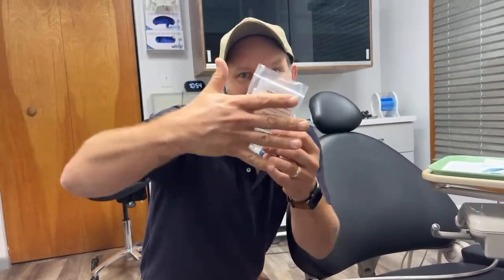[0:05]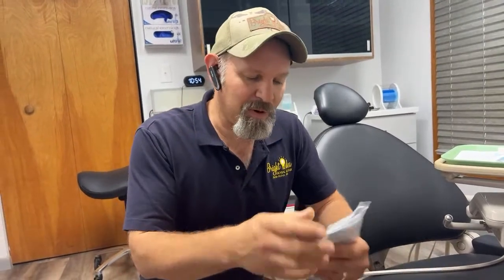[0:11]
I'm trying to do this to show you what it's going to be, but it's centering my face, so it's in all the words. So I'm having to do this, and we were able to get a little more information. I was on the right track.
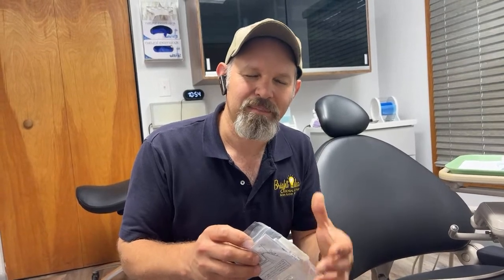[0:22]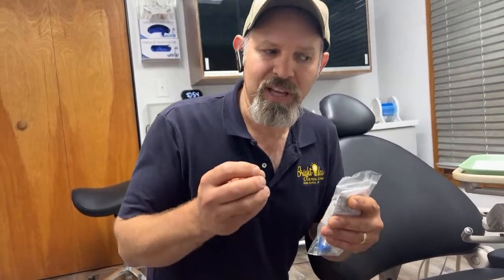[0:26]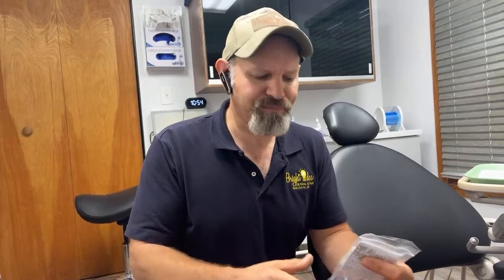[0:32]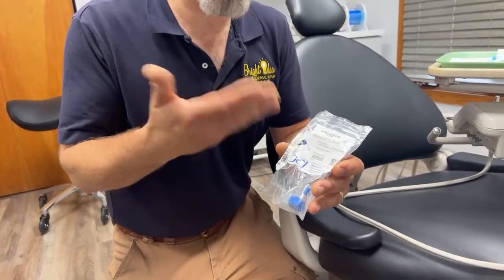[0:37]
That potentiometer is bad, I believe. I tried to adjust it and it didn't do the trick. And things always break where they're touched, where they rotate, or where they move. So this is no different. I think we just have a potentiometer that went bad in that lower position. And in my repair bag, I happen to have a DCI, or I'm sorry, DCI 9258.
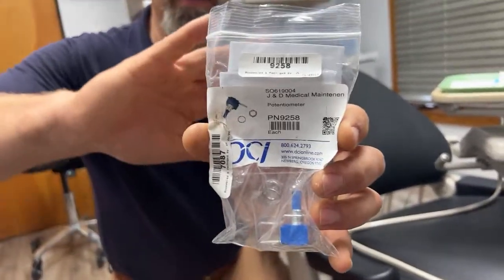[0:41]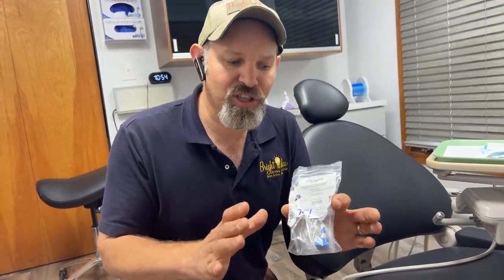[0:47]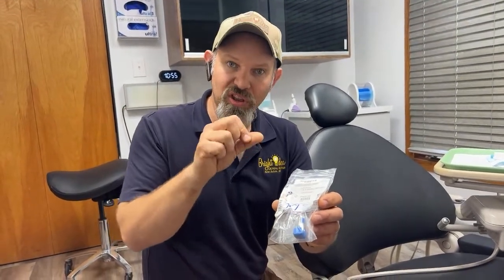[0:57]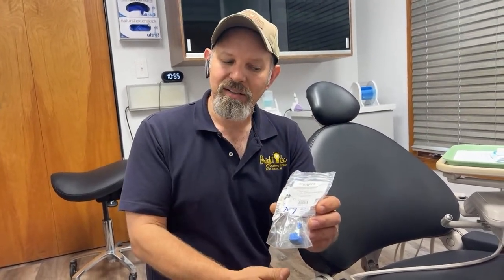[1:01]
This is a pretty common part. This potentiometer is a variable resistor. What that does is as it rotates, the resistance value goes up and down. That will tell the machine what position the rotation is in, which gives it an idea of the position of the chair.
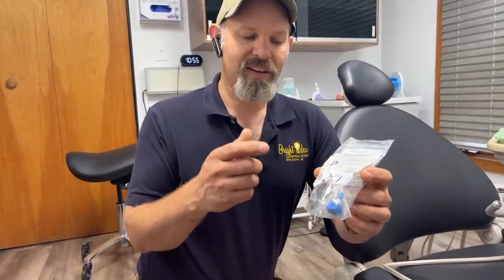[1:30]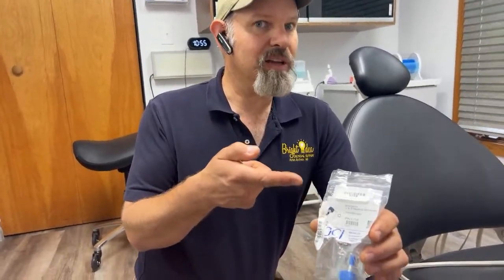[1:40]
The way the chair works is there's a main board, and the main board takes in all these different sensors and different things, and the chair can make decisions on what it can and can't do based on those. Essentially, if it loses that sensor, it either won't move, or it'll freak out, or it'll throw an error. But this particular part, I know for a fact, is on Adec chairs, and it's also on Pelton Crane chairs. It's on a lot of different chairs, in multiple places, usually the base and the back. So this is really a worthy part to have in your repair inventory.
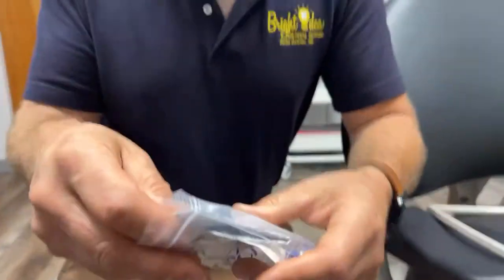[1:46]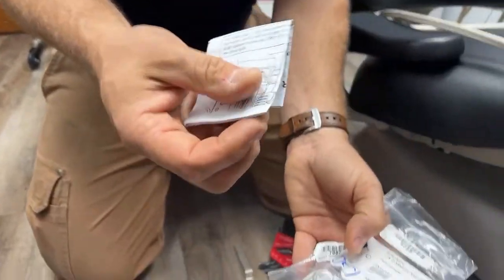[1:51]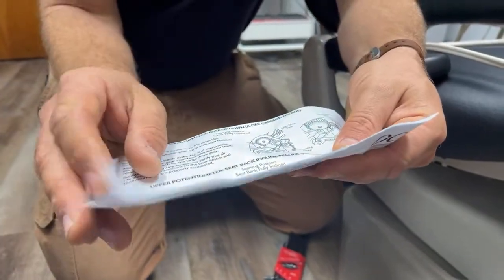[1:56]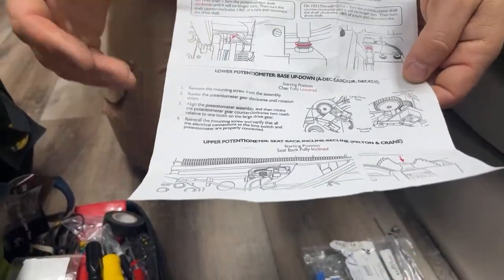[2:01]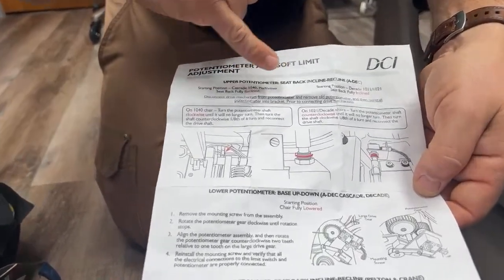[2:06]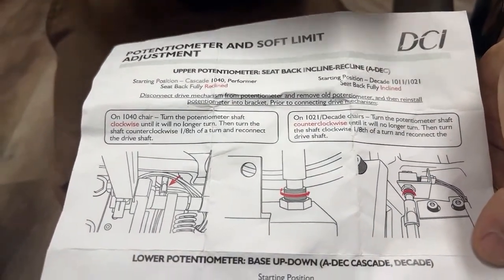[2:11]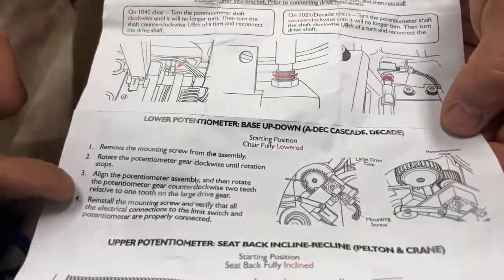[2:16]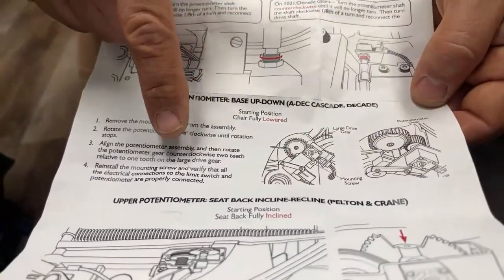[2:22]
One thing that I really like about DCI is not only do they give you the part you need, but they spend a lot of time coming up with really thoughtful instructions. They've got instructions here for our Adec 1040, and also 1011 and 1021. This is for the seat adjustment, and right here, this is actually for the base up and down. So we're going to be following these instructions right here.
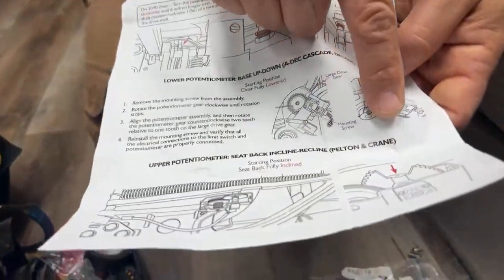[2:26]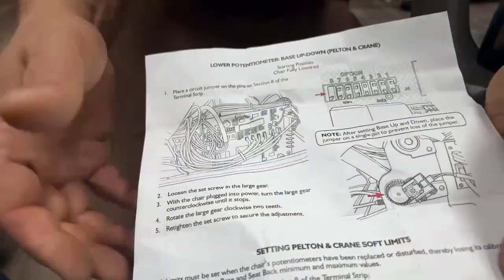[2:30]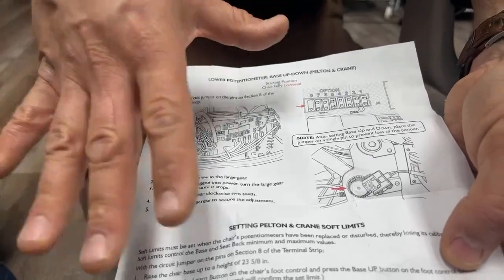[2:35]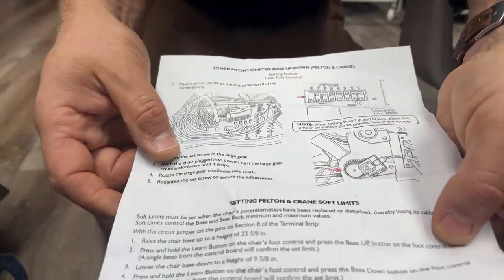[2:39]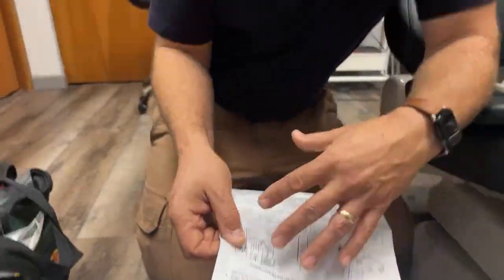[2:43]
But keep in mind, there's also Pelton Crane right here, and then right here. This is great information. It's all online. You can actually search this up and look at this closer for yourself. But this is really the heart of dental repair. These little manuals are always great to pay attention to, because they'll tell you exactly how to do the types of things that you need to do to fix your equipment.
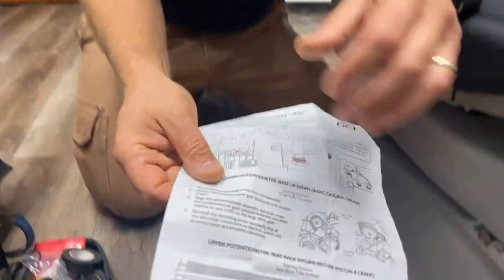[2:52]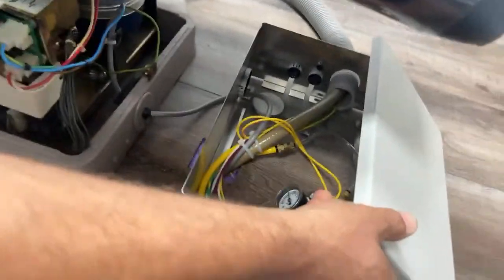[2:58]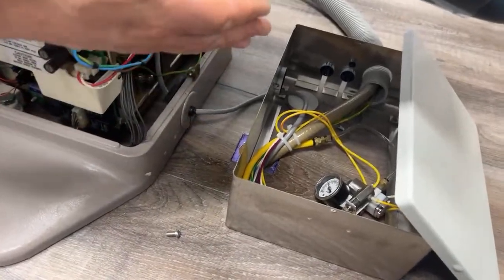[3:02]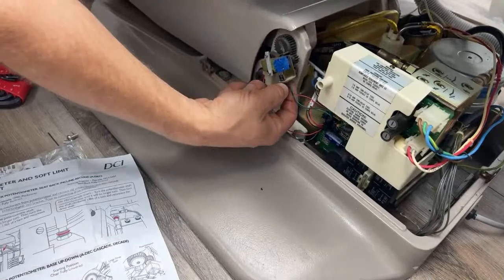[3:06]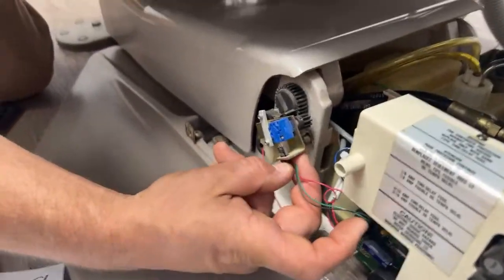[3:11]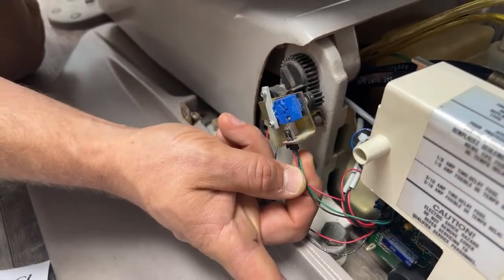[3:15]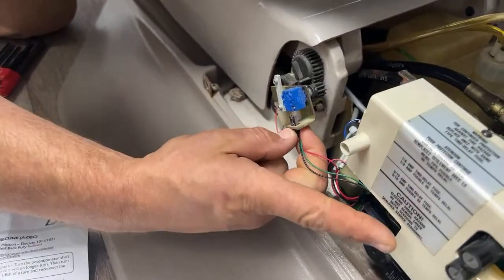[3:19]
So we're going to go ahead and unplug the chair. Actually, I'm not going to unplug the chair, because in this case, the plug is downstairs. I'm just going to disconnect power to the part, and this should be fine for this scenario. There's a little tab right here, and I'm going to pull. I'm going to pay attention to this. I'm going to remember black is up, okay?
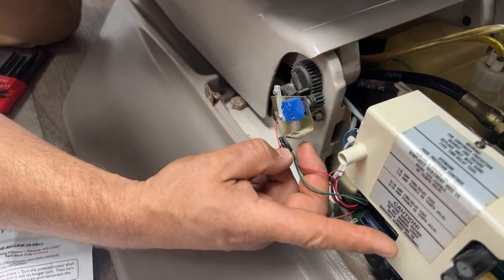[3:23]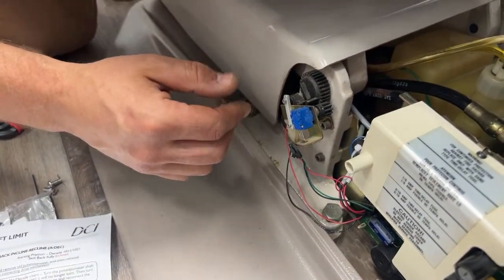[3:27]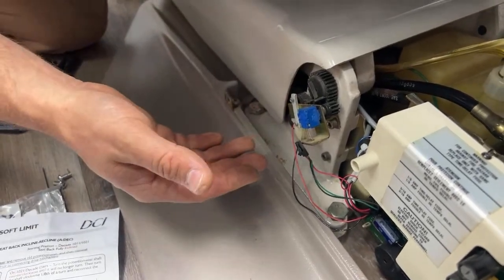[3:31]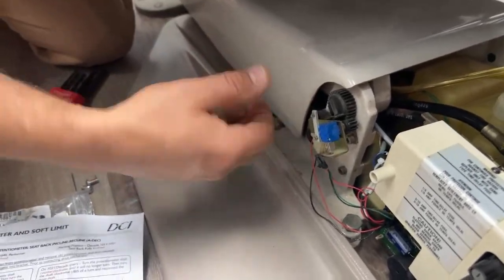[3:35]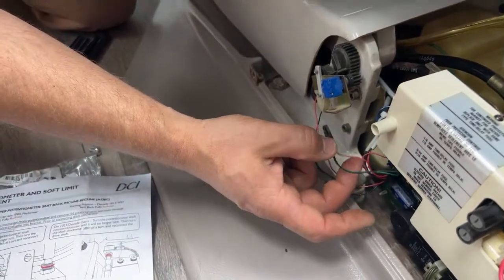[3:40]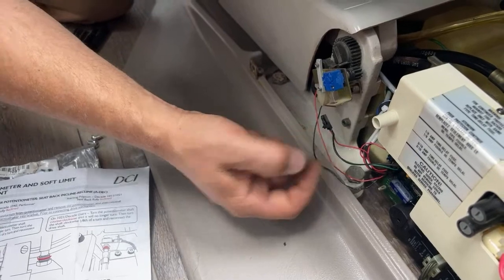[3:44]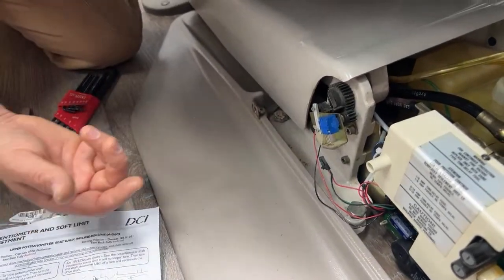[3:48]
I have had an experience where I've plugged these in upside down before, and it is not really keyed. So if that happens, you'll get really crazy things. It'll still kind of work, but it'll actually work in the opposite direction. That's weird. Also, typically wiring has a memory. So this one kind of wants to go back in the correct orientation. So I'm just not really going to mess with that a lot, and it'll be fine.
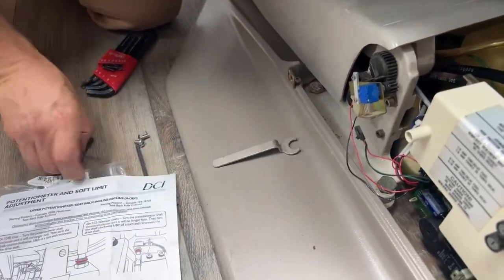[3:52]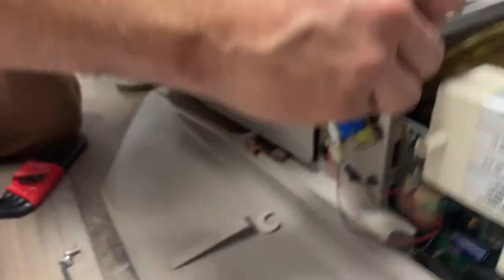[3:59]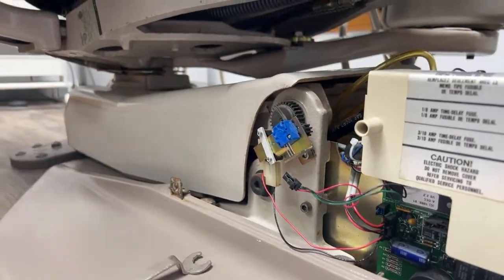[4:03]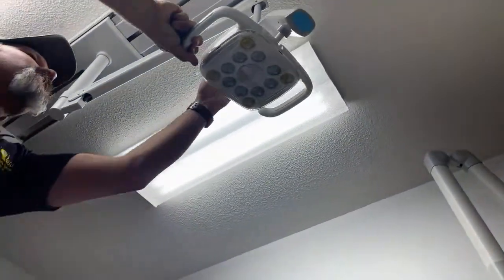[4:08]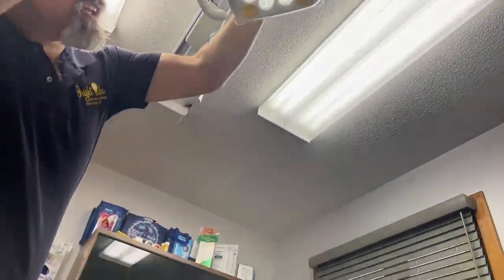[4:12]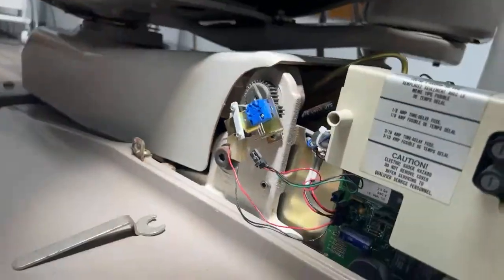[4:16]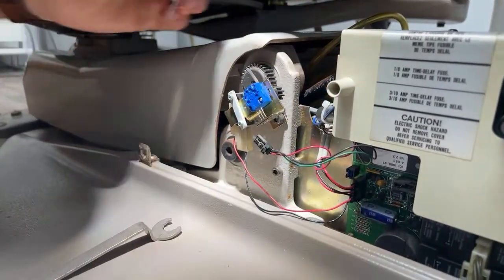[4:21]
For this process, I'm going to need a couple tools. The first tool I'm going to need is my little Allen wrench again, and we're back here. One of the great things about being in a dental office is they actually have lights. Amazing technology that maybe I can figure out how to turn on. So maybe that'll make things a little better. All right, if I can keep my head out of the way.
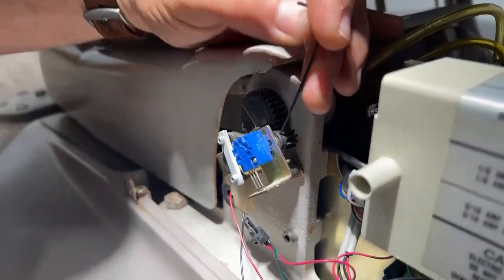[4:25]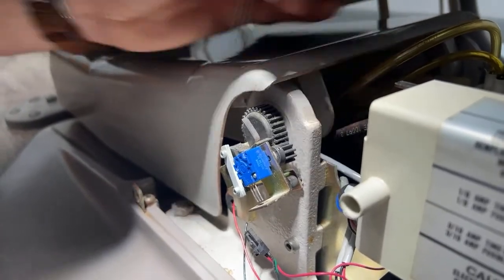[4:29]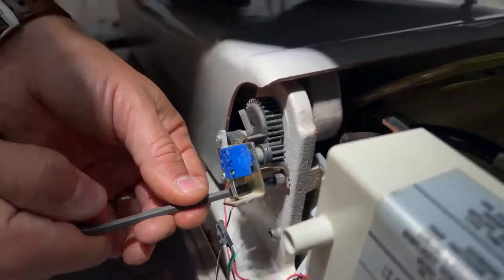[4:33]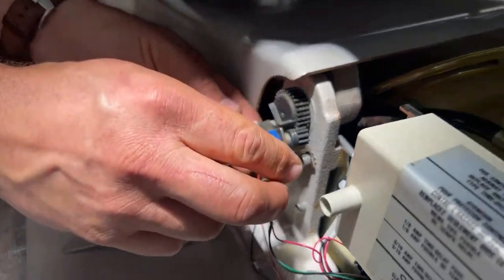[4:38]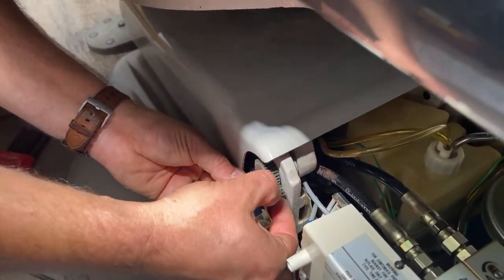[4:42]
I'm going to take this screw out. All right, at least I'm not going to take it out. I'm just going to loosen it. Then I'm going to loosen this bracket again. I'm not going to remove it. I'm just going to loosen it. Now what's going to happen is this may come off.
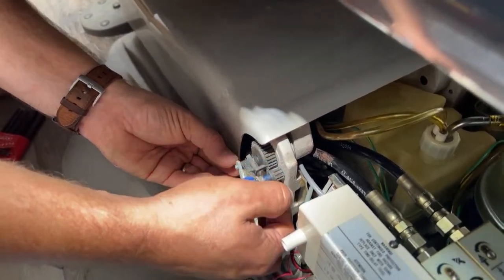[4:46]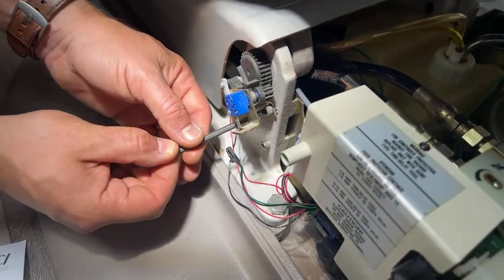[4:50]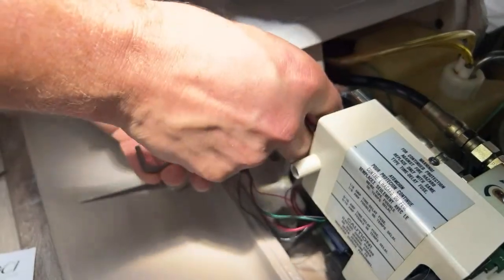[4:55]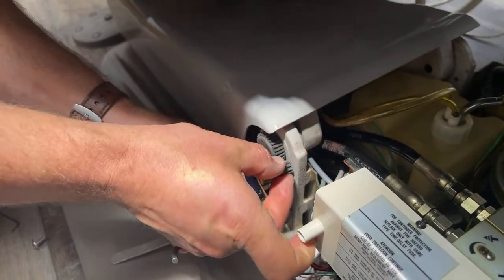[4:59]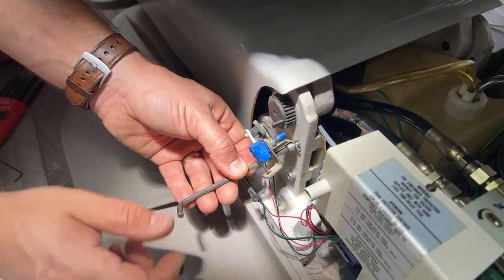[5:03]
And I'm gonna rethink what I'm doing here. So I'm going to take that further off. That'll allow me to take this gear off, possibly. There we go. Okay, so the gear's coming off.
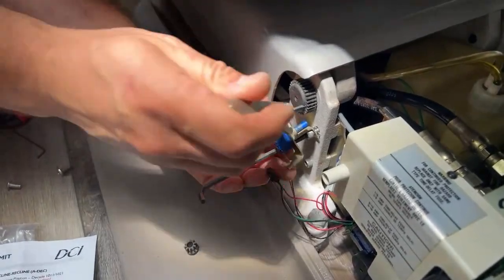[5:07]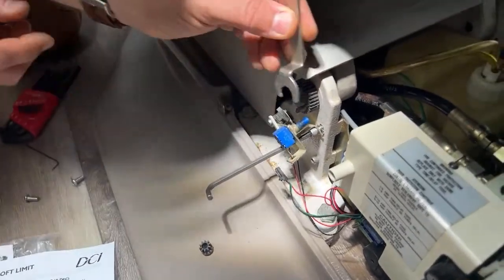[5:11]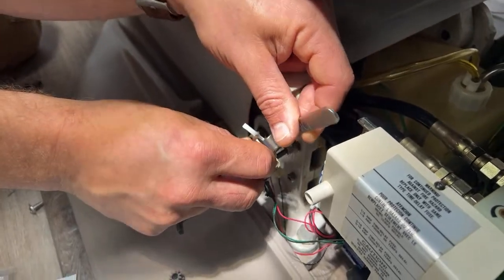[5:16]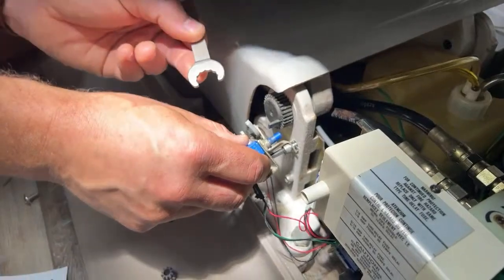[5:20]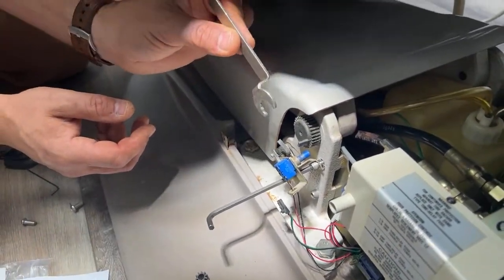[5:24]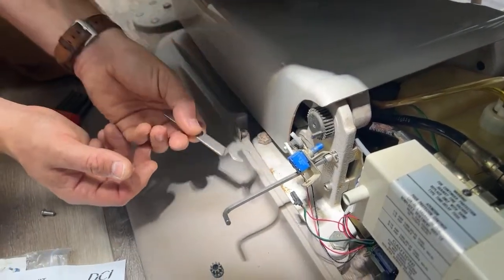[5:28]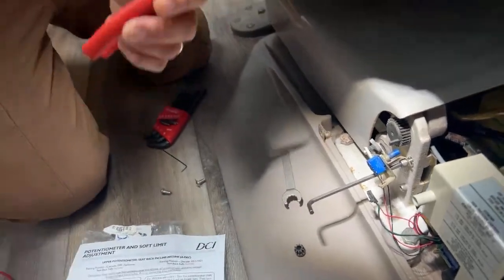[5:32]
And then what I'm going to do is this panel wrench is specifically designed for this type of a nut. All right, it's a panel nut. So, ooh, man, I'm lying to you. This one actually doesn't fit. This typically fits different switches and things, but it does not fit this. So that's not unexpected. So no problem.
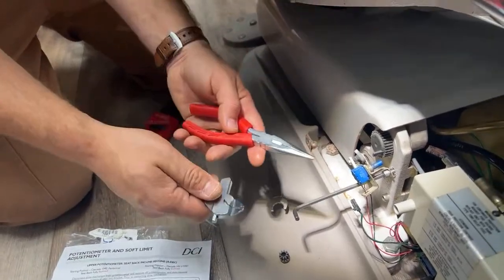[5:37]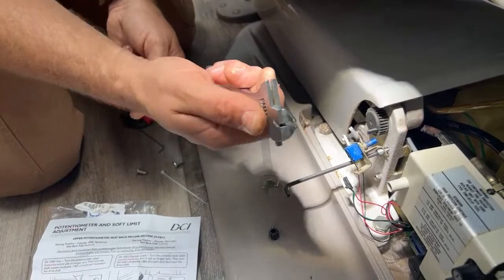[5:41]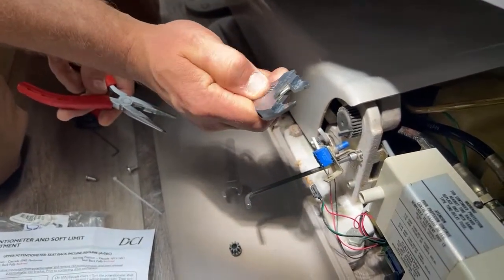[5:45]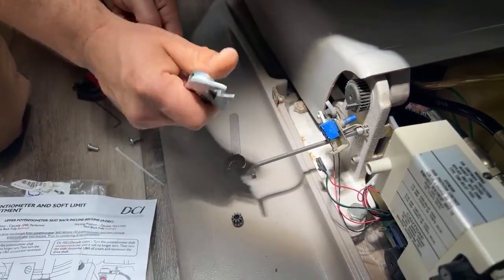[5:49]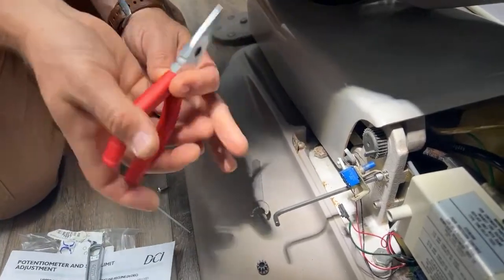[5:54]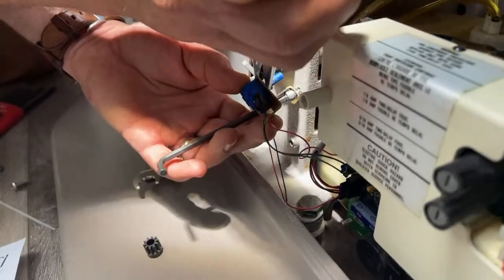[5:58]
Basically, if I was by myself, I would just use this. I also have this really cool wrench. It'll fit in places that a standard wrench can't fit. But you guys got me, so I'm just gonna go with my gut here. So pliers are just my way here. So I'm just gonna loosen that up.
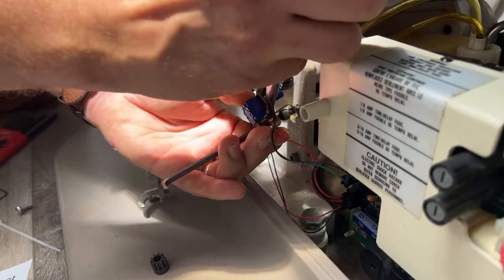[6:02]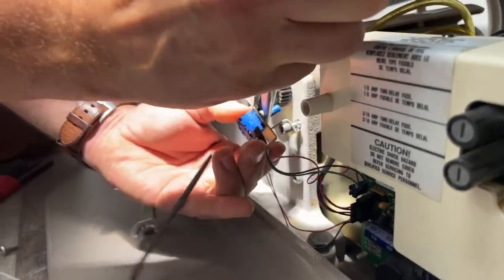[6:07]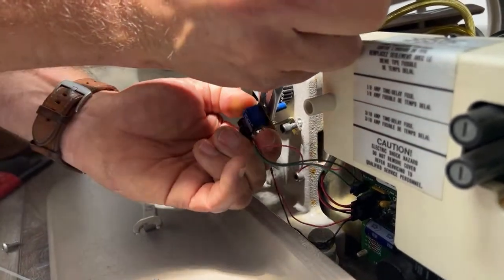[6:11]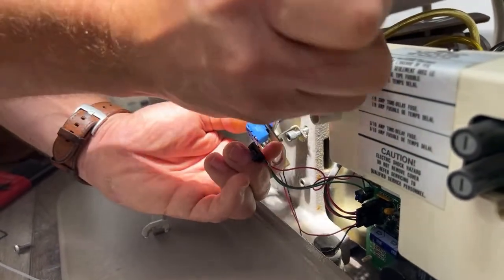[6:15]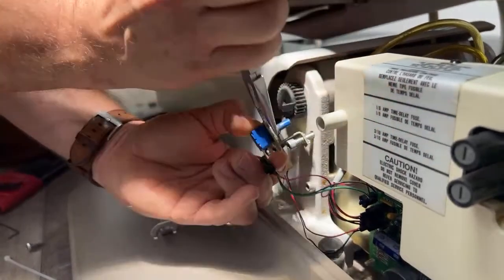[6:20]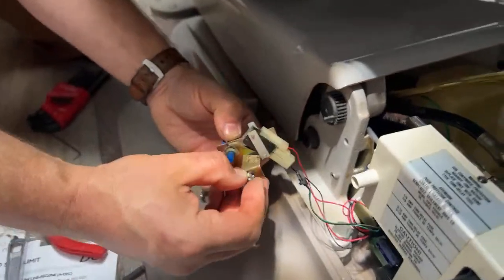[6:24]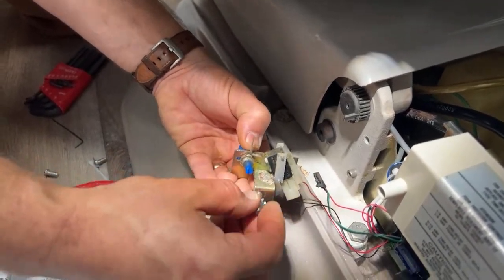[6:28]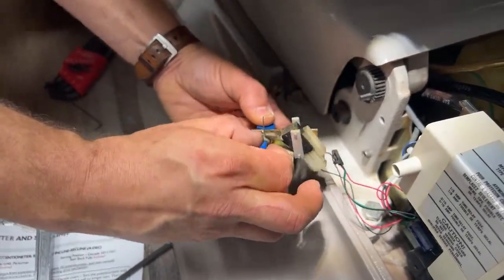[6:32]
Ooh, come on, baby. Sometimes you gotta be nice to stuff. All right, come on, sweetheart. All right, there we go. A little bit of crud on there. All right, so now we're moving. So I guess I can just take that off in my hand. I'm just gonna leave that on there. All right, so now I'm just gonna spin this off.
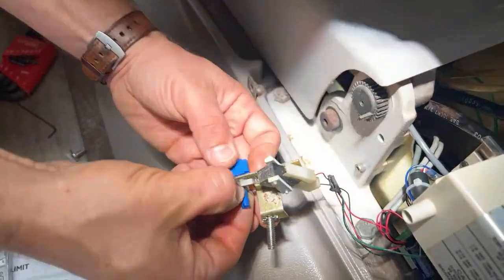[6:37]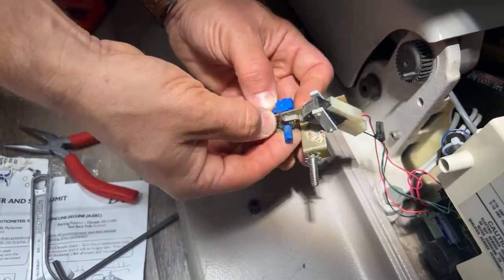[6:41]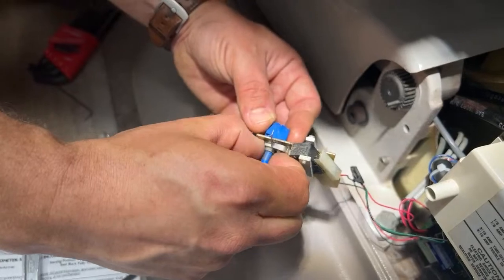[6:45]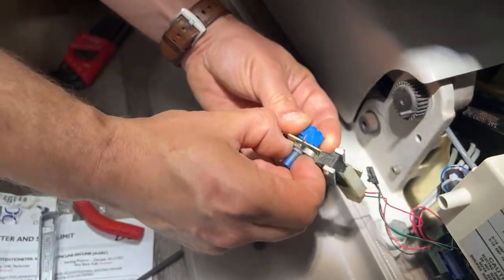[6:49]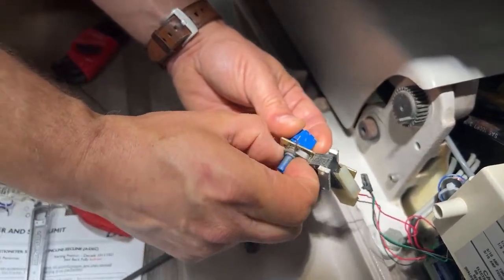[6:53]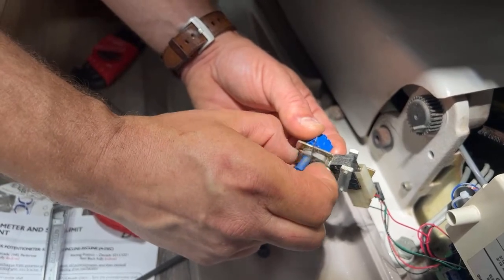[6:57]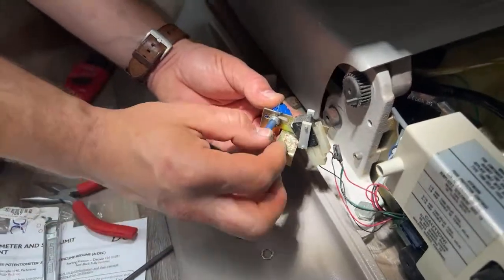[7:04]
I've gone back and forth on wearing gloves when I work. I've been doing this now since 2001, so I've just kind of established my work habits of effectiveness over some safety sometimes. But there's no real nastiness in here.
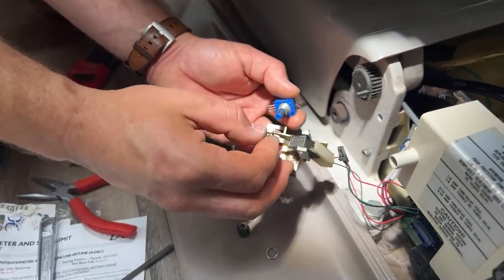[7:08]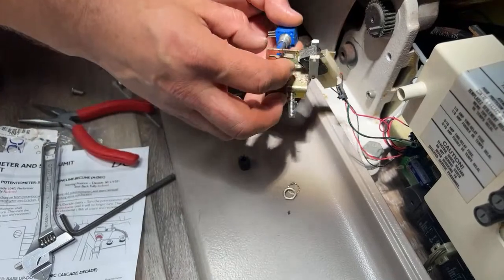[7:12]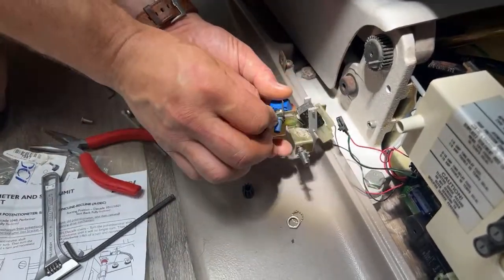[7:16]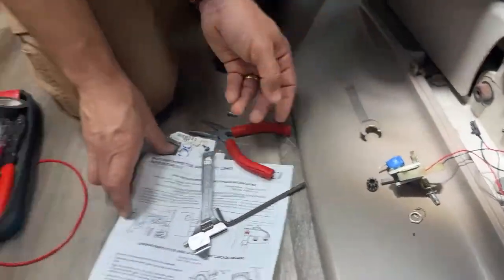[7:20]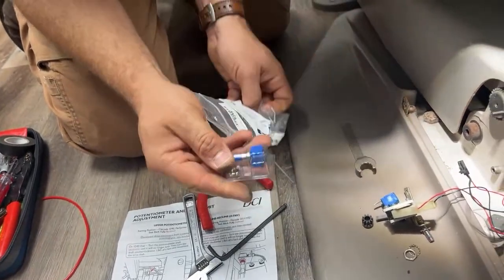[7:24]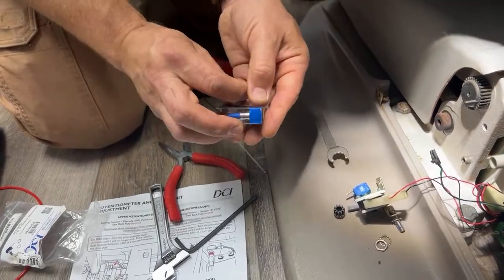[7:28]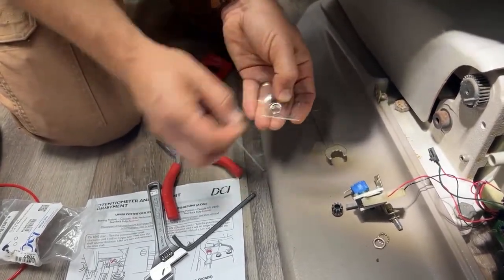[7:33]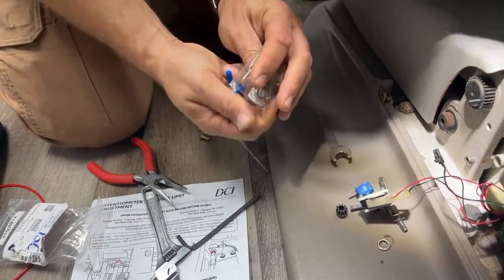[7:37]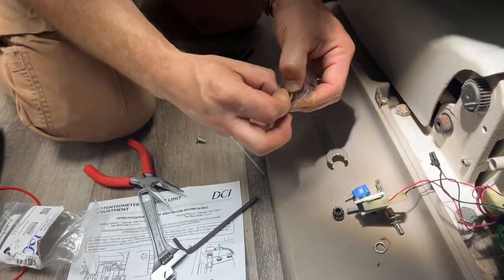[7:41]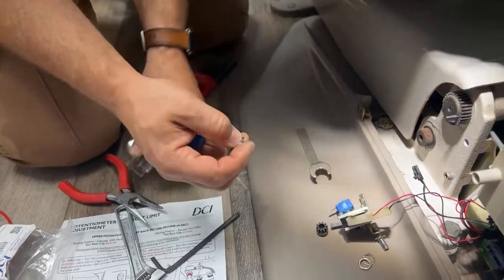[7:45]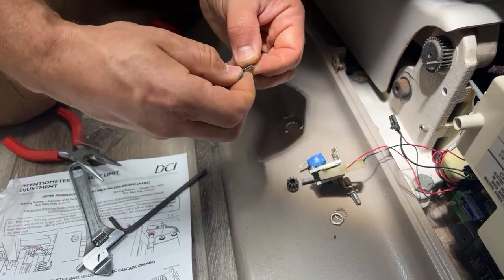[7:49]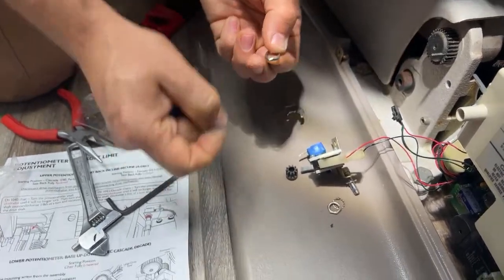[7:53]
So, all right, I'm going to take off the old part. It came off in this order. So we're going to take the new part. I'm just going to leave this together for right now. Probably should have had that other part prepped. So this guy, I'm gonna come out of here. It's actually a nice little packaging. So we've got everything that came out, you get in the new pack. If you ever have to reuse hardware, or say you drop something and it's gone forever, you can reuse the old stuff if you need to. Since I don't need to, I'm just gonna put the new stuff on and get that tape off of there.
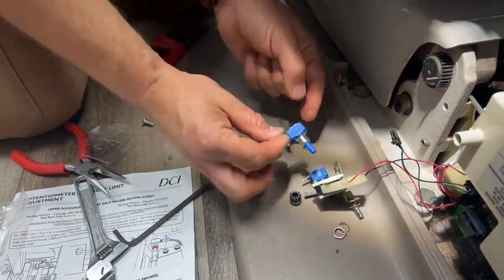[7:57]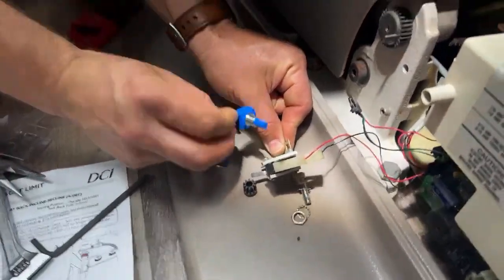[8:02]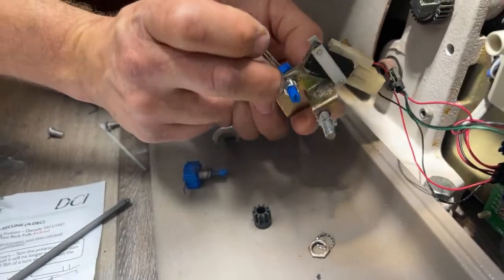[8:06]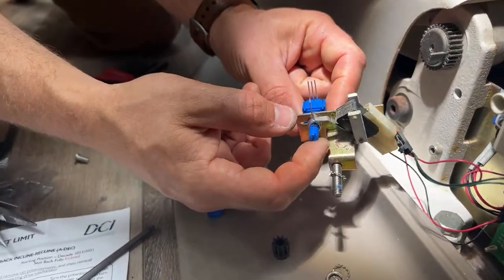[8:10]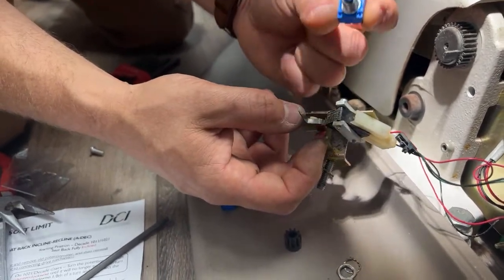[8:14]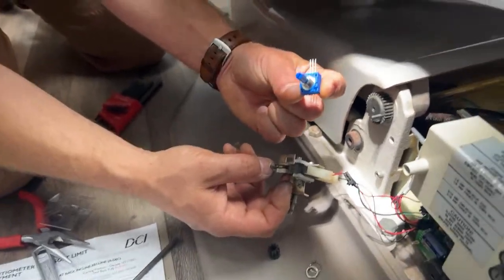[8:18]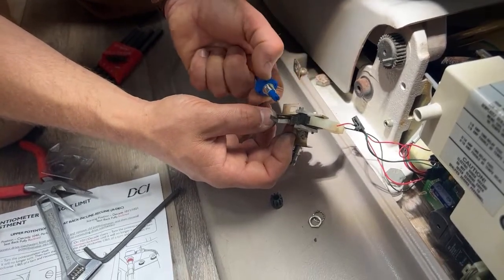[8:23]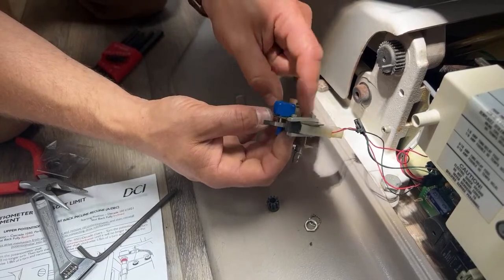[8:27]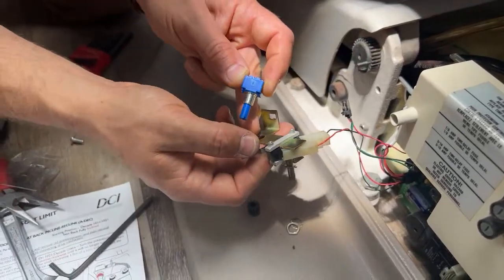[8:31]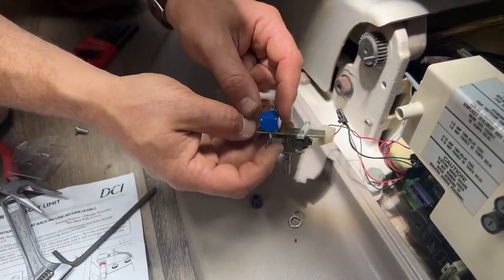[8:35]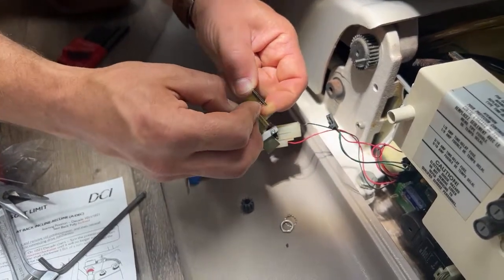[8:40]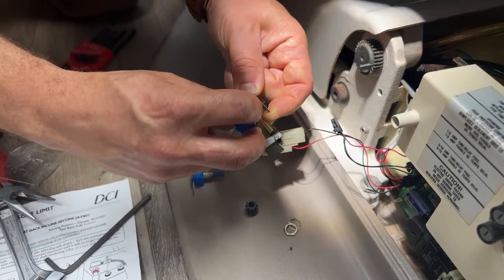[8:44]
Okay, so I'm going to take the old one out, put the new one in, just like so. And that's actually interesting. Huh. So that's really strange. The new one is keyed. But if I was to put it in where the keys were, actually, wait a second. No, you know what? It must have rotated. Duh. Okay, so there's a key right there. There's a cutout right there. Sorry, little brain fart. All right, there's that. Now I'm gonna just try to see if I can get those navigated.
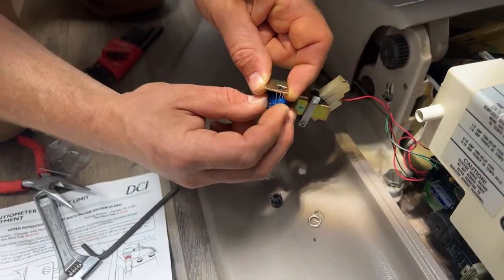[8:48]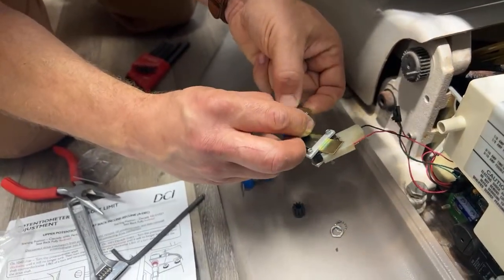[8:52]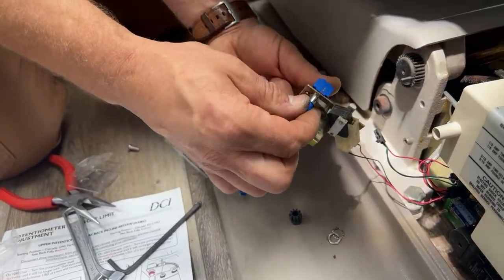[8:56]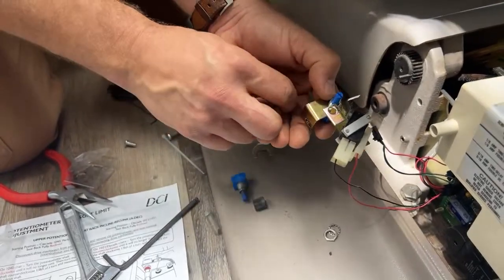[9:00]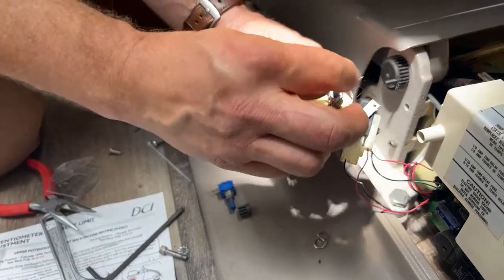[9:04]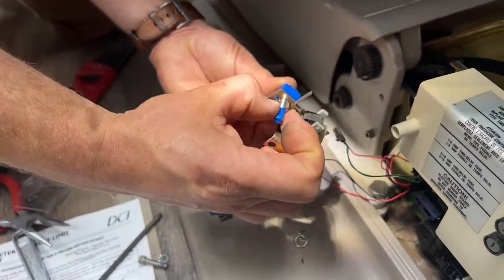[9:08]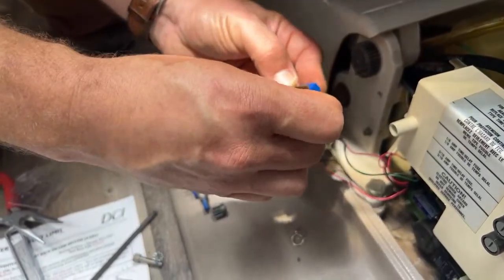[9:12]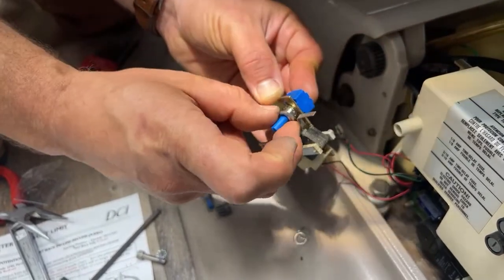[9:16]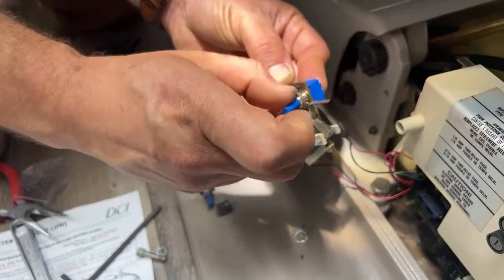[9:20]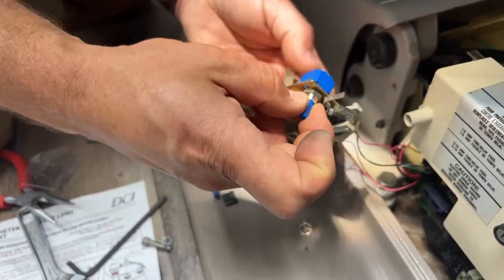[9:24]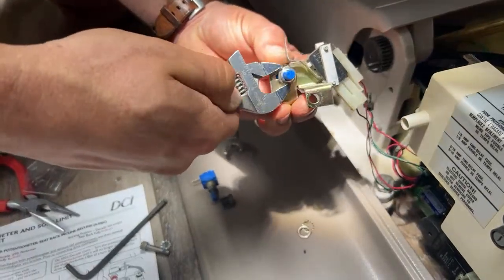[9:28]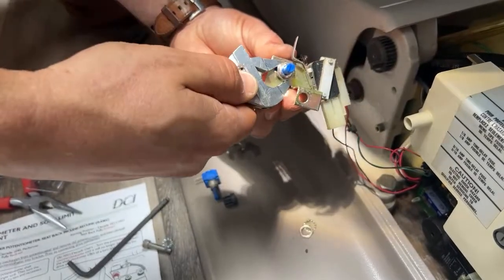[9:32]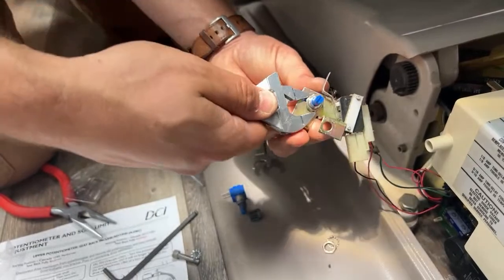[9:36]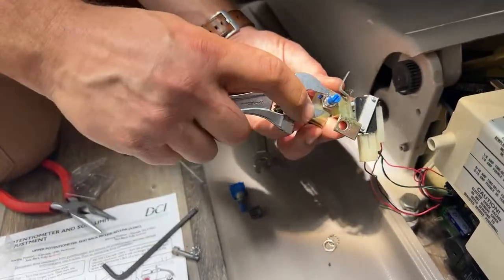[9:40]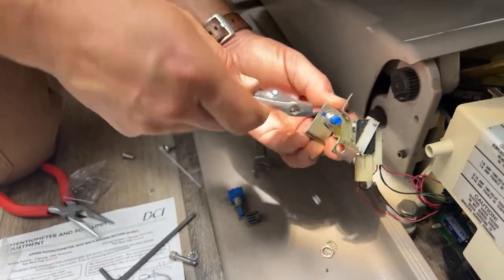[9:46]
Thanks for getting me out of that one. All right, so now that, oh, that was great. All right, lock washer first, and then that. Okay. And then just to show you the right way, and use our crescent wrench. I'm a crescent wrench guy because I just don't like carrying around a ton of tools. My tool bag is pretty slim. I've just kind of learned how to work with fewer tools.
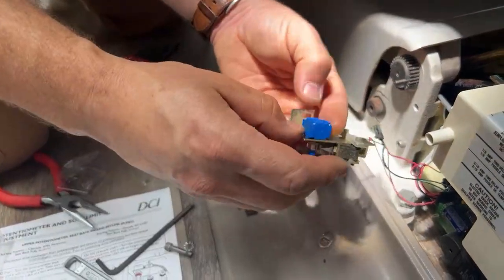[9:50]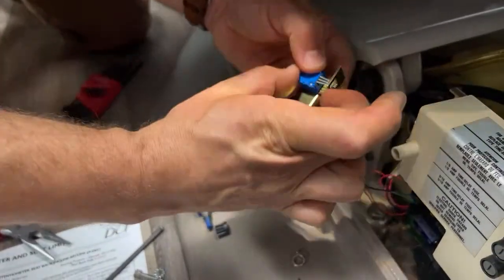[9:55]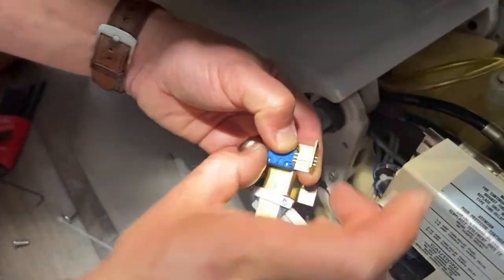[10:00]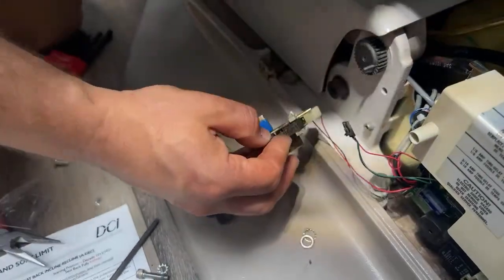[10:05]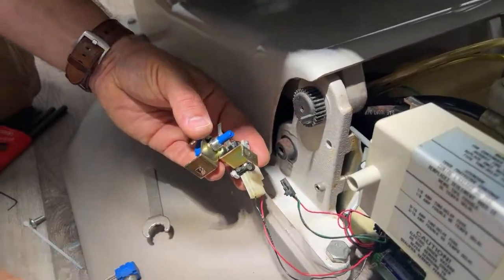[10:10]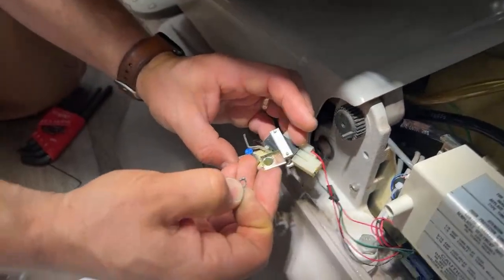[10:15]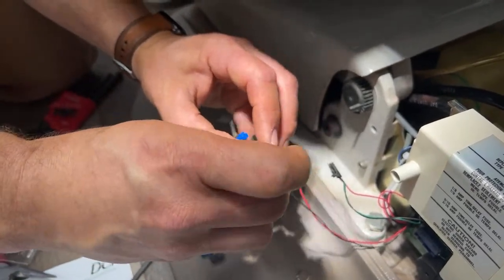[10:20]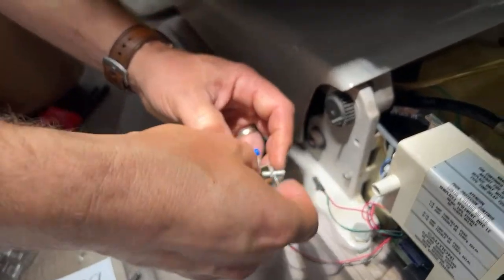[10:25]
All right, so those are all kind of together. I'm going to take my fingernail and just kind of spread them apart a little bit so that they'll stand a chance of hitting that connector when I hook it back up. So, okay, now this part is ready to go back in. Now I remember that right in here, there's actually a witness mark of where the washer was on this side, so I can remember it's there. This screw is going to go back in there.
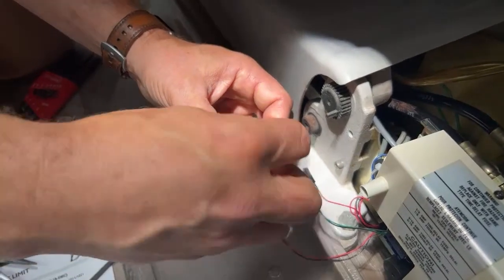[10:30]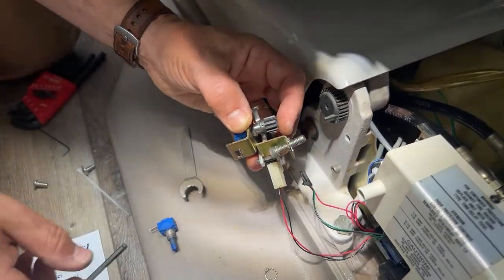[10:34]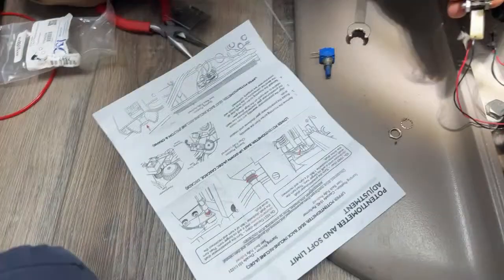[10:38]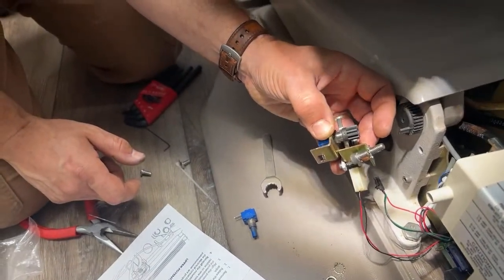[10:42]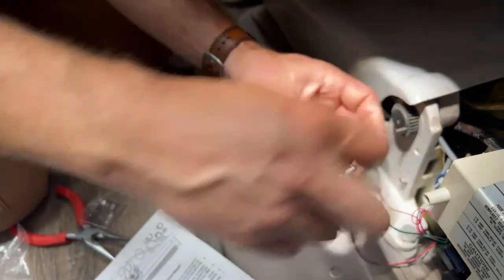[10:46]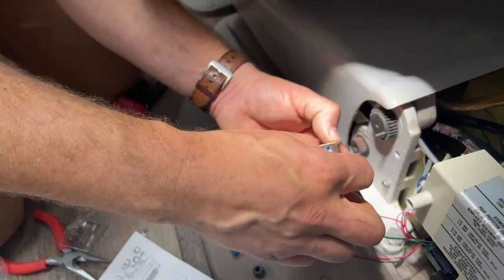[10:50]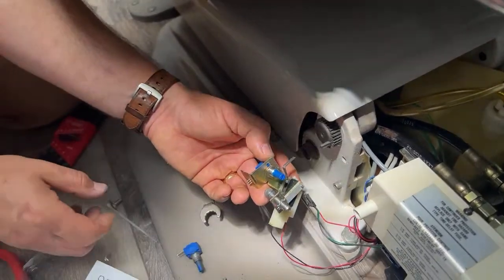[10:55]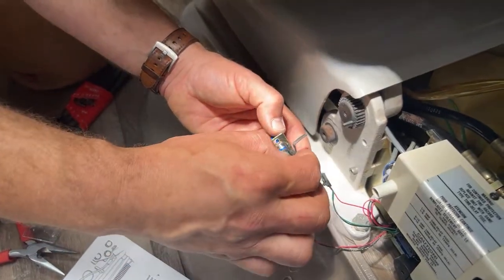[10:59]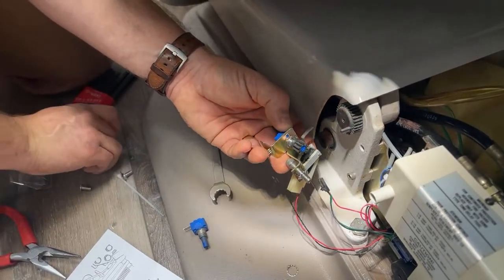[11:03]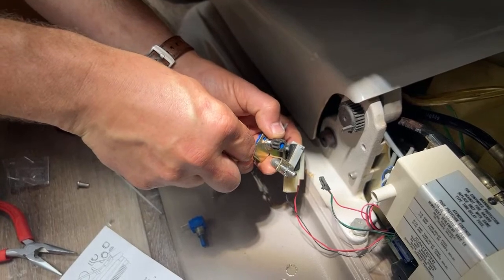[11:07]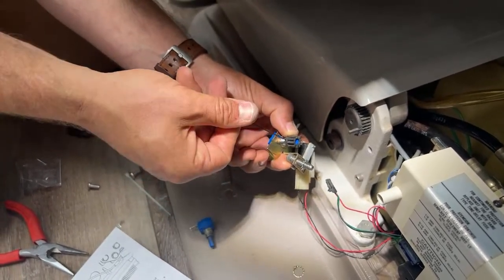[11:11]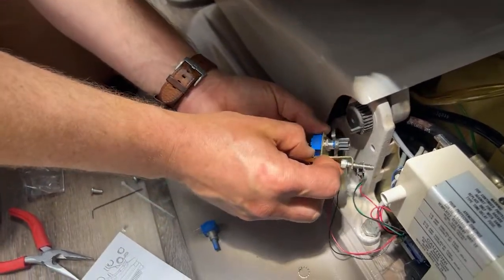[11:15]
And then, because I know this is going to be an issue, let's see. Now, I'm going to actually reference my instructions here. It's going to say, rotate the potentiometer gear clockwise until rotation stops. So I'm expecting that clockwise means as I'm facing it. So I'm going to turn it clockwise till it stops. So it stopped. Now I'm just going to leave it there for right now. I'm going to put this guy on so it's where it needs to be. And remember, we're going to rotate clockwise until it stops. Then we're going to rotate it counterclockwise. So that's just going to hold it in place for right now.
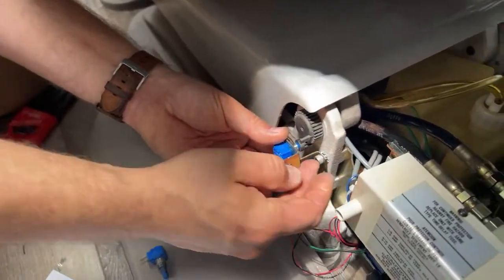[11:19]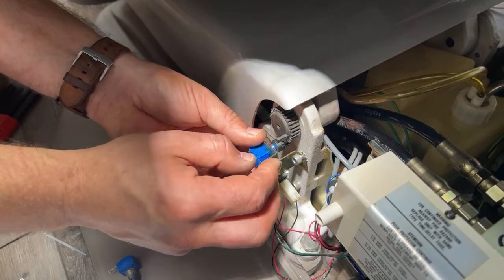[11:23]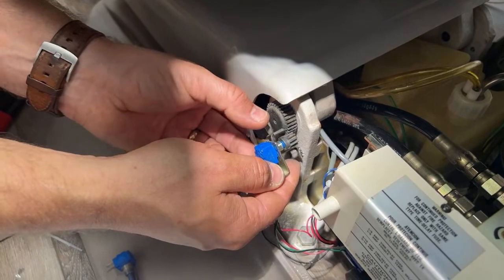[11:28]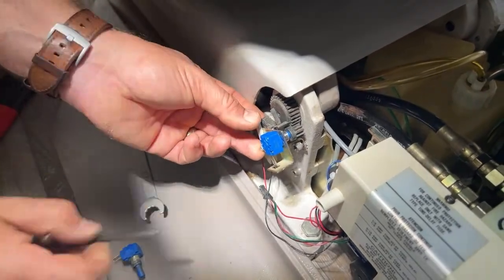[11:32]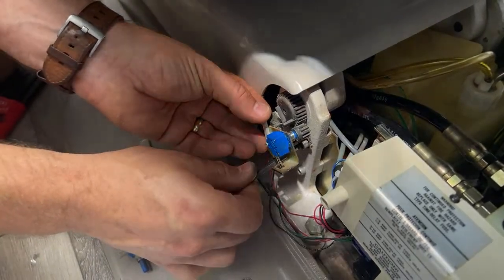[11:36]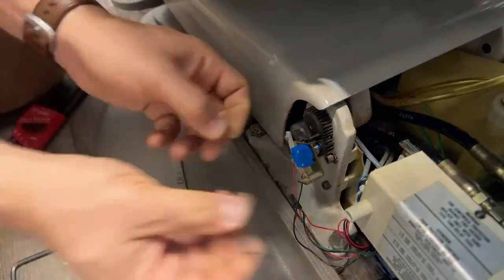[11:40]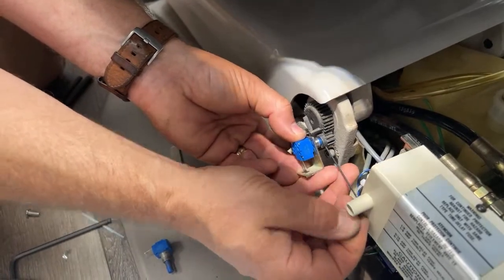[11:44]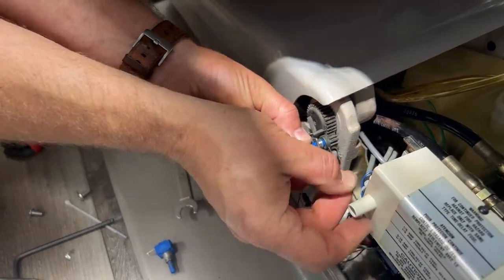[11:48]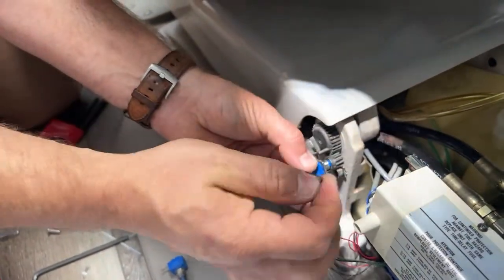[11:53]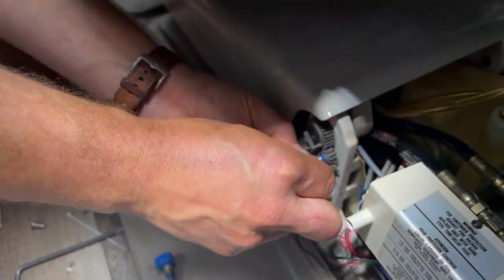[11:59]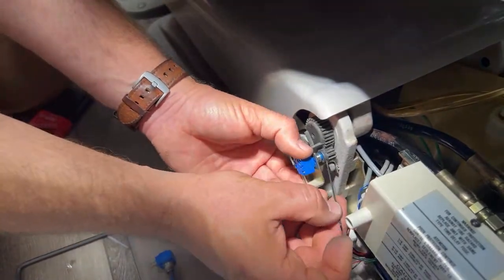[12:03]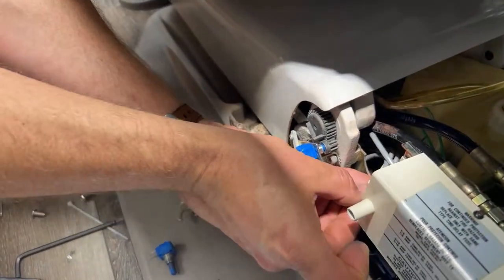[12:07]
Here's this. We're going to get that back in place. Oh, so that is going to be like that. All right, so everything's kind of back where it was. All right, I'm going to get that. Okay. So I'm going to take this, rotate, get that loosened up. Okay. So clockwise until it stops. All right. Maybe I tightened that too much. Oh, no. All right. Oof.
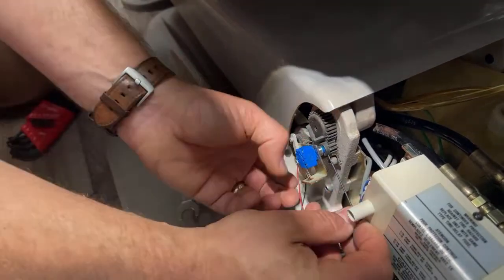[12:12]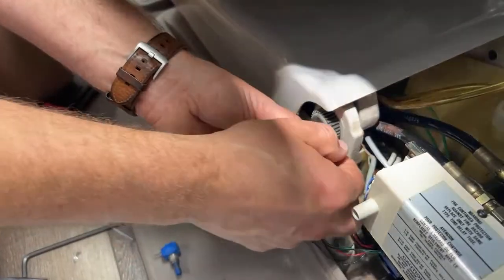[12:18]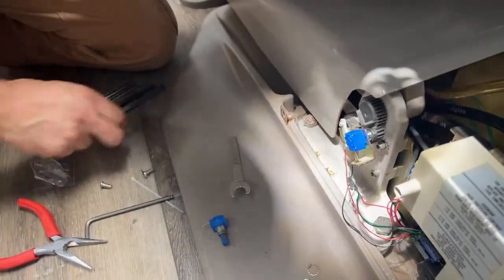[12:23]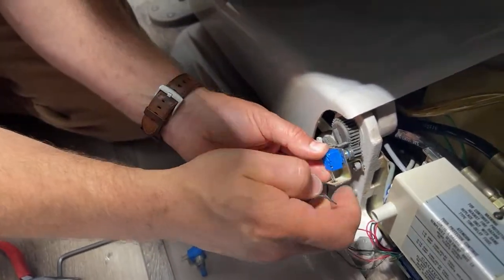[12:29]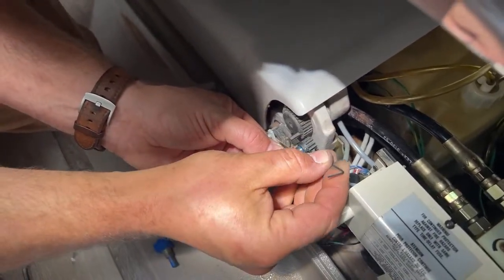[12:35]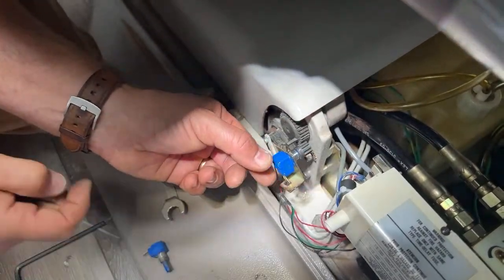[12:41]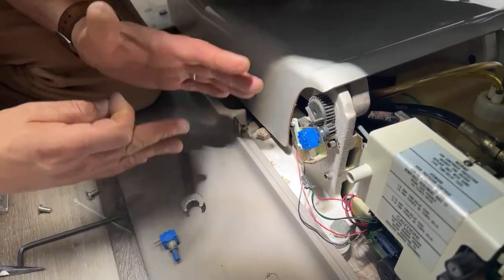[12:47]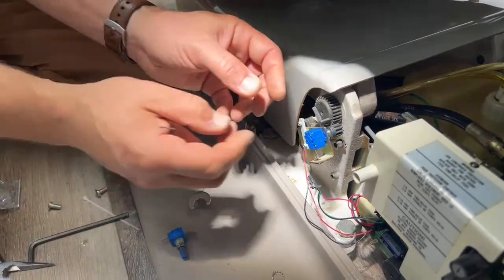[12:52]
I feel like there's things in life that have prepared me for this job. One of those is definitely that surgery game Operation where you have to get stuff that you drop. So I'm good at that game, but I'm also trying to be better at not dropping stuff. Okay, so let me, and I'm repetitious. I think when you work on equipment, repeating your process is good. Like checking steps as you go leads to more reliable repairs. So that's kind of the way I work.
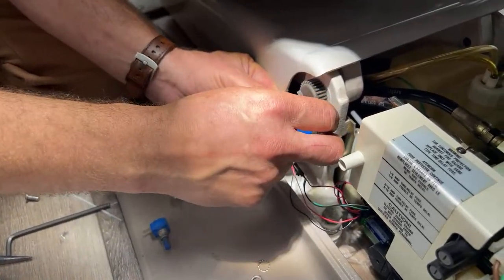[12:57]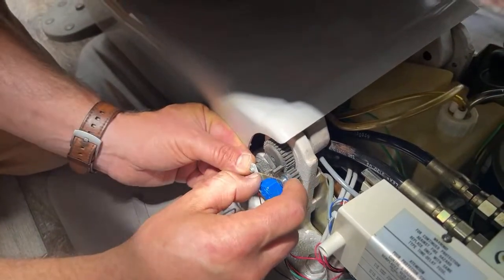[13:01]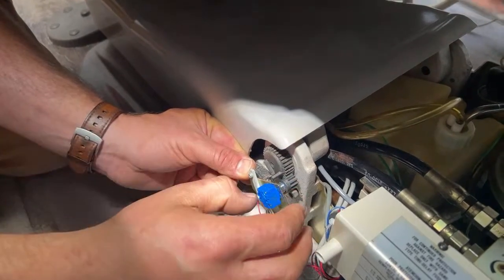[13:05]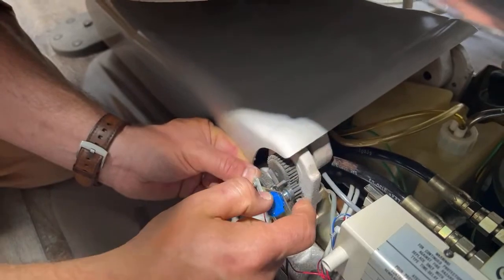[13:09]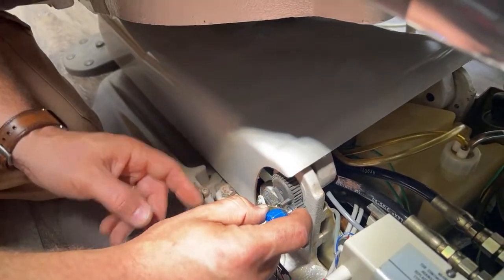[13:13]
And hopefully it's not driving you crazy, but all right, so we're clockwise, all the way clockwise. Now what I'm going to do is it says rotate 2 teeth. So it's home. That's the position we're in. So now I'm going to, and they said we're going to start all the way down.
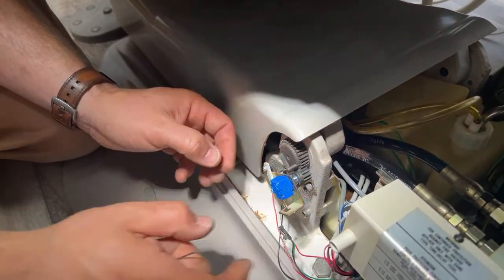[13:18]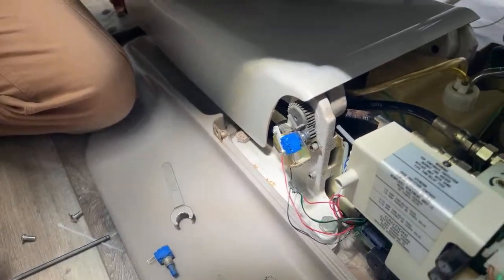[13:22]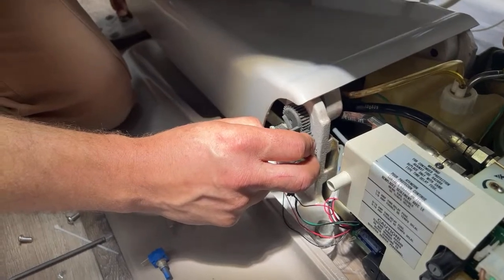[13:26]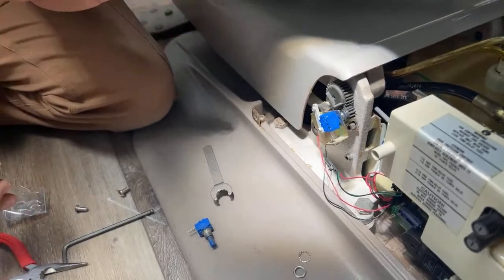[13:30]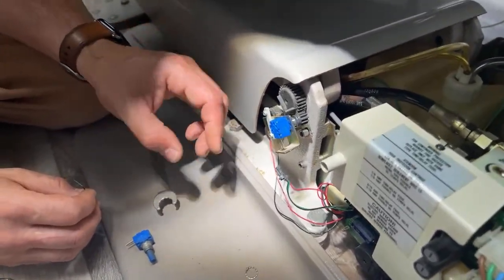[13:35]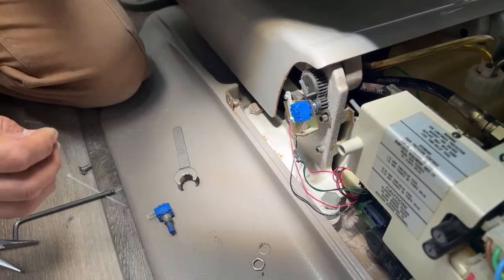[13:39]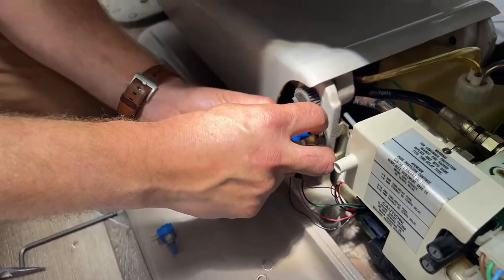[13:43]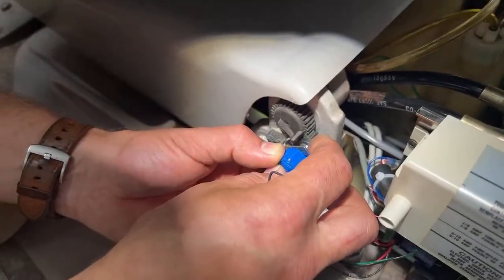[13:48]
I'm going to actually start where I want the arm all the way down to be. I want it a little bit raised so that we don't encounter the same problem. So this is the new all the way down. It says rotate counterclockwise 2 teeth. So there's 1 tooth, I'm going to rotate it up 1.
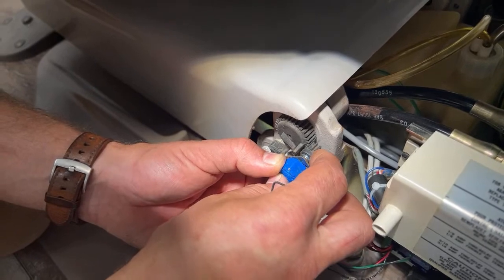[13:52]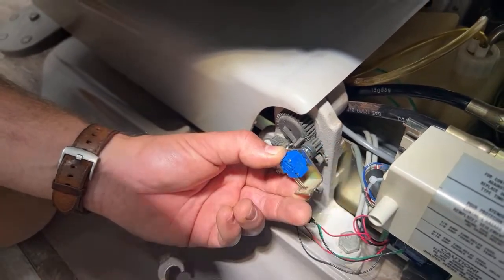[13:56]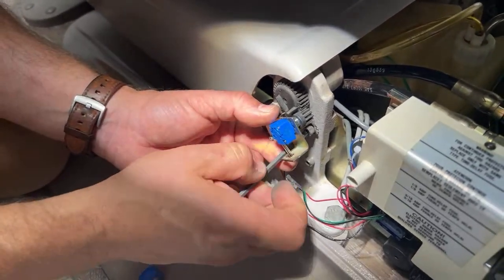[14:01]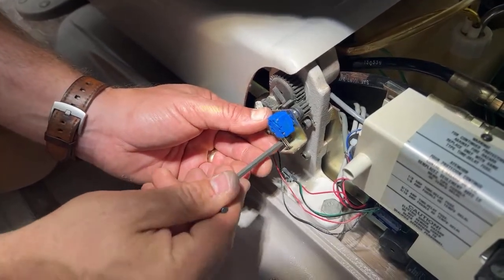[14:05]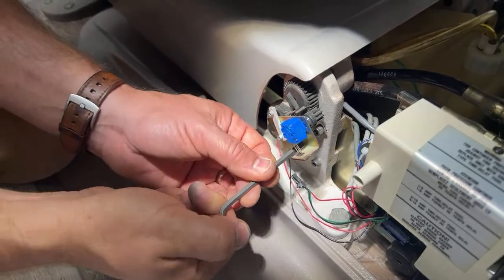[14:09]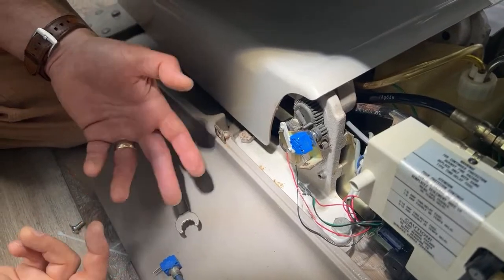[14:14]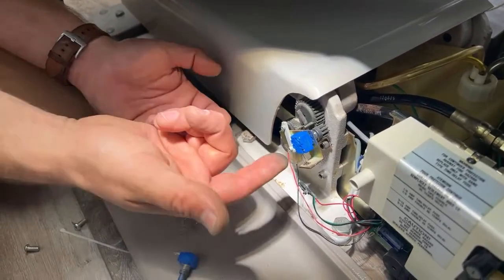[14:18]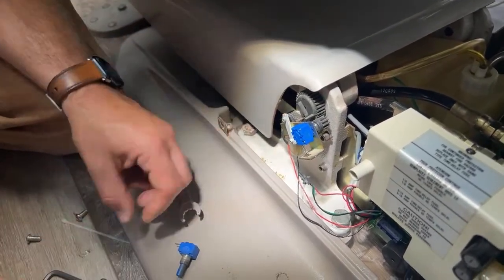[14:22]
1 tooth, 2 teeth. All right. So that says, according to the manual, that, and it's actually disconnected right now. So just in case, that's interesting. So maybe that part wasn't doing anything. That's kind of interesting because it's running with it not hooked up. So that is now tight.
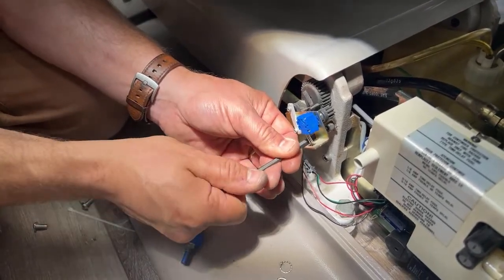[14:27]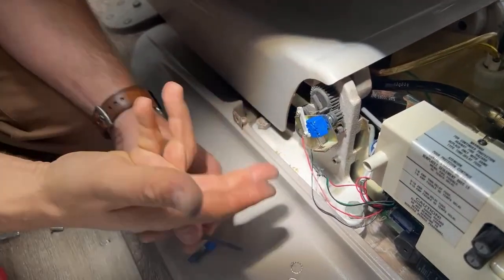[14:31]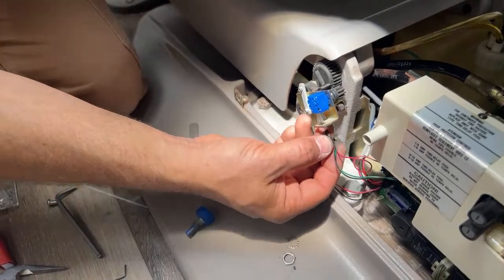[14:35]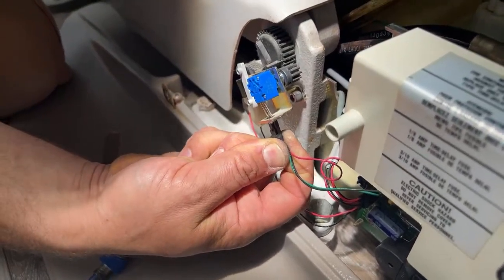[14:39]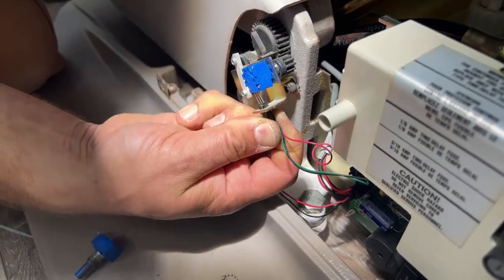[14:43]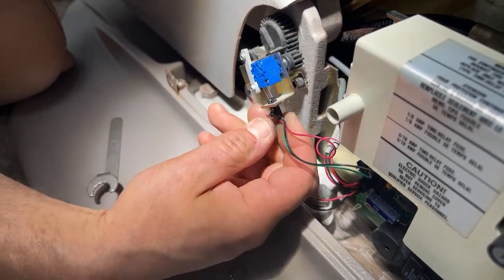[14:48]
Let me just double check. Everything looks like it's meshing up okay. Everything is secure. Now I'm going to take this and hook it back up. And there's 3 little wires, or 3 little pins there. Hook that in. And now, all right, come on, buddy.
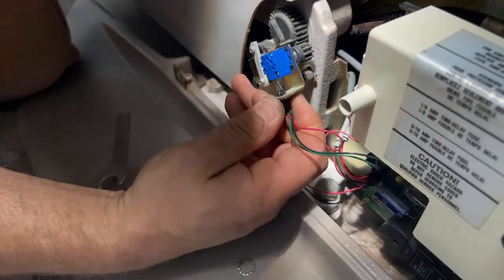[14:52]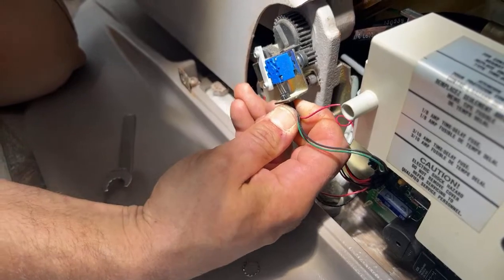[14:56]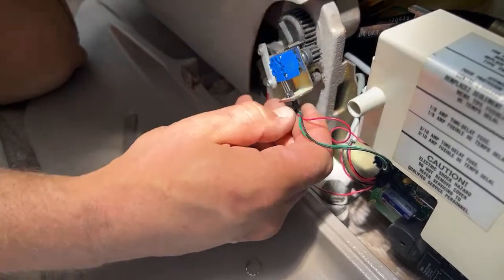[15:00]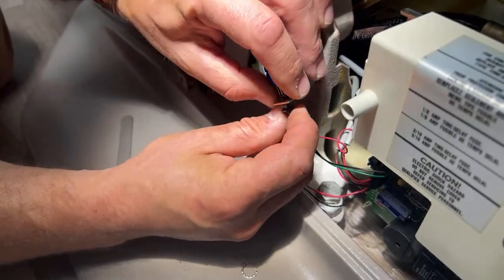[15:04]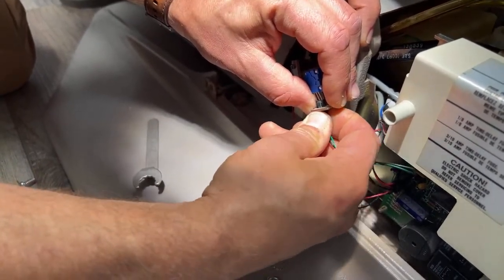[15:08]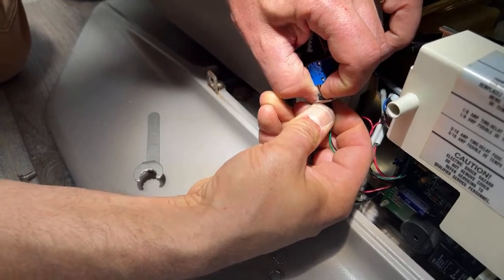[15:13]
See how something feels like it's hitting there. That's really strange. All right. There we go. Oh man, that's just awesome.
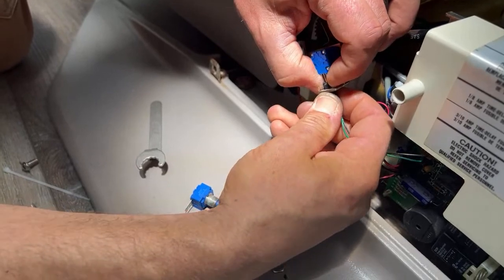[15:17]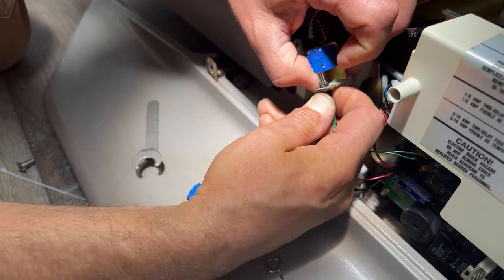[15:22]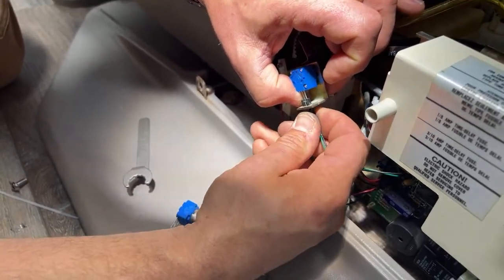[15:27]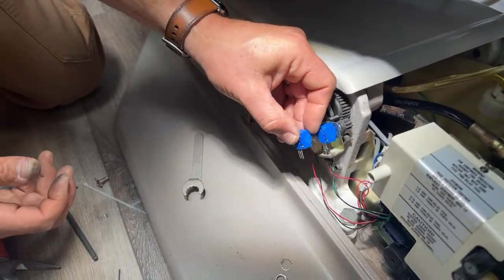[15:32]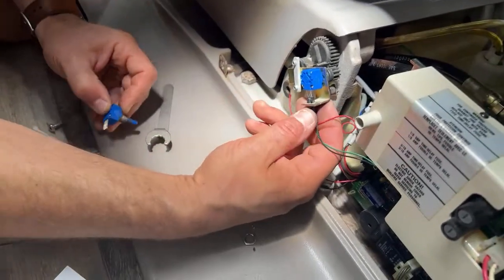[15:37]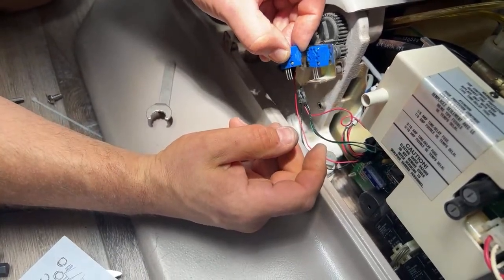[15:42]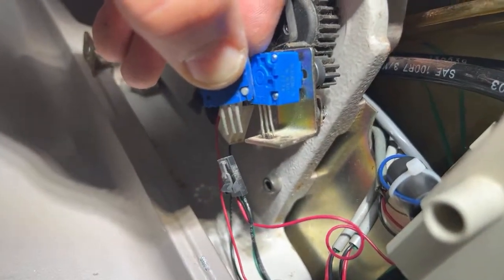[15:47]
Okay. Well, oh, so I guess maybe that is... You know what? That's interesting. So you know what's going on there? Those are actually longer. Get a load of that. So those are actually, well, how about them apples?
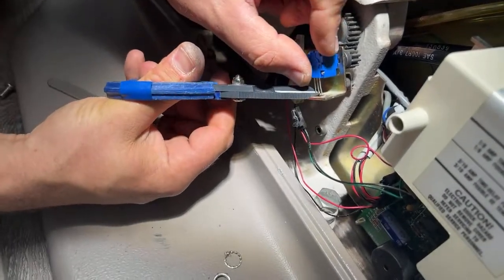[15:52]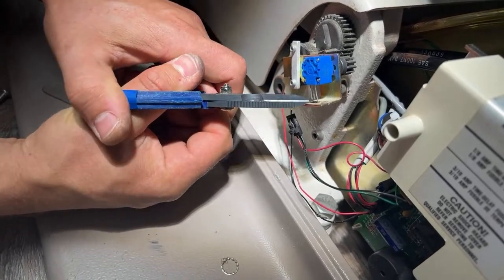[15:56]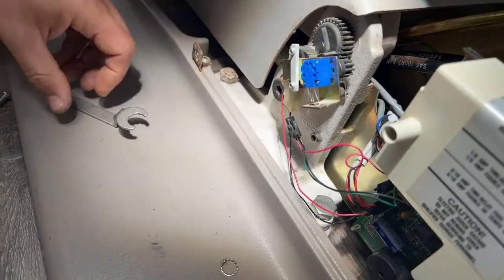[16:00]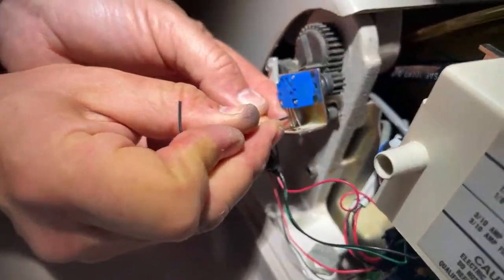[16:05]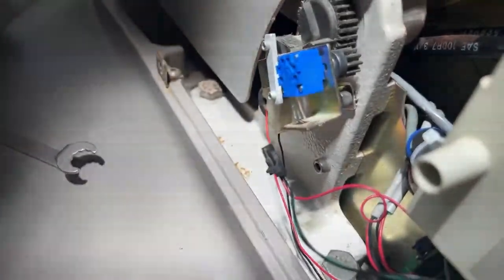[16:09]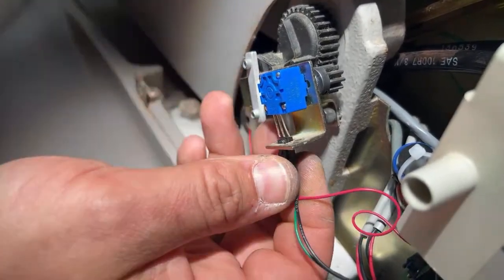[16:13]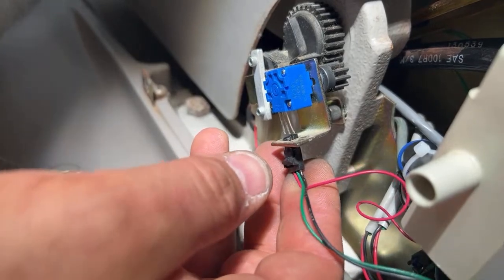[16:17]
I'm just going to go ahead and bend those. The reason I'm going to do that is so that when this actually goes back together, I'm going to straighten those out. All right, so when this goes back together, here, guide these into place.
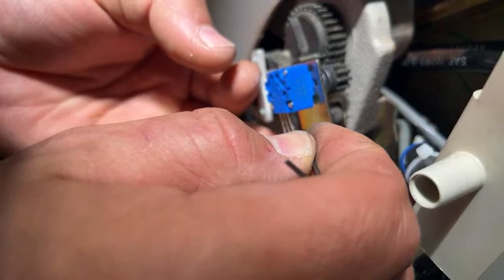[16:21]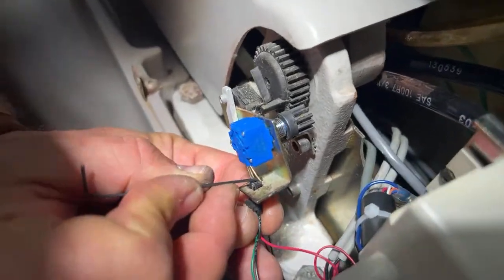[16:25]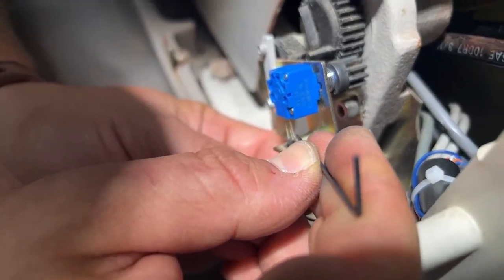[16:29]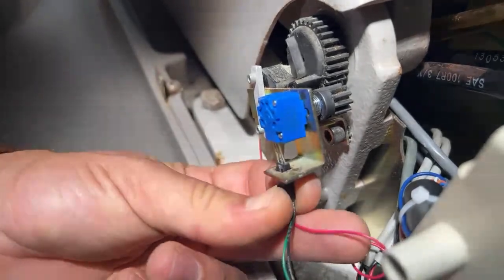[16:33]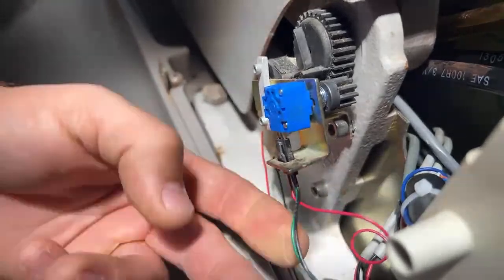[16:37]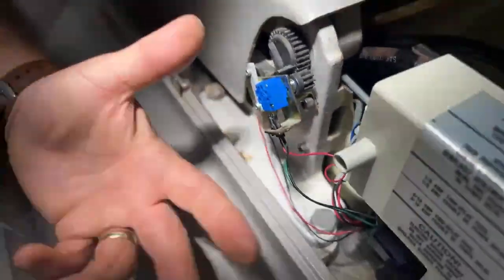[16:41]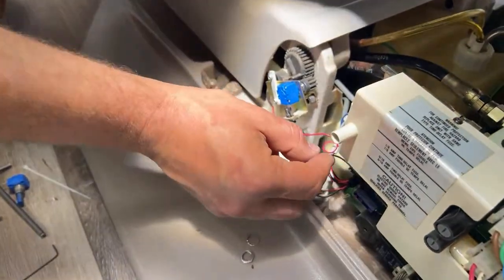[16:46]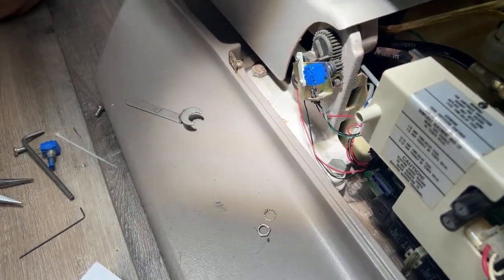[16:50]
That was weird. When you're trying to shove something back together, you just have to be a little bit careful sometimes, because sometimes things are trying to give you information as you're doing it. Obviously I was looking for the engagement of that lock, and it wasn't going. I was shoving it, and the real problem was it was too long. I would have just broken something if I had mindlessly shoved it back on there. So now let's go ahead and see what we got.
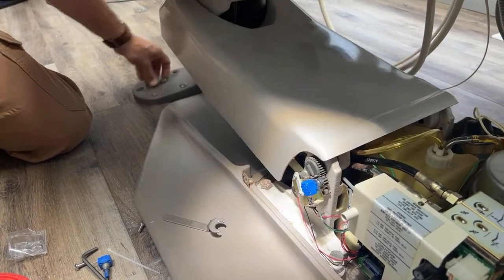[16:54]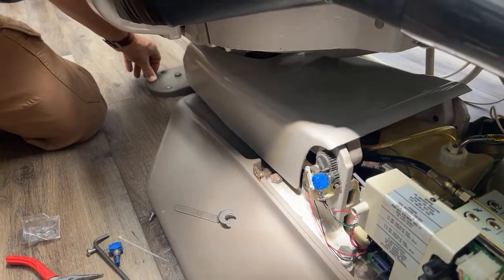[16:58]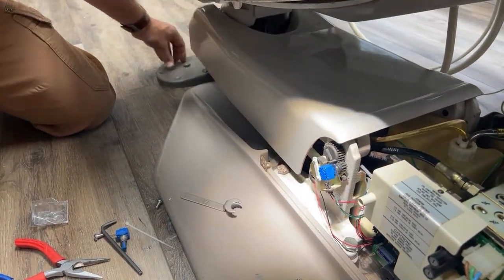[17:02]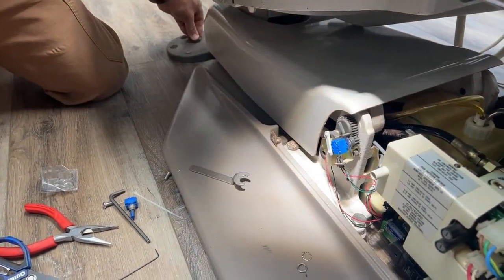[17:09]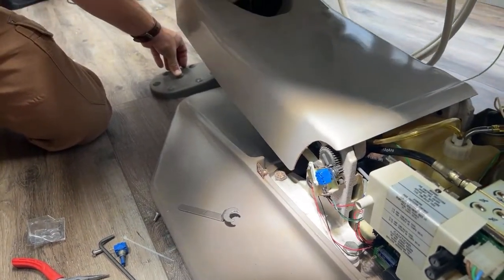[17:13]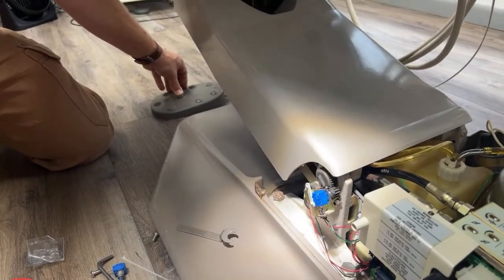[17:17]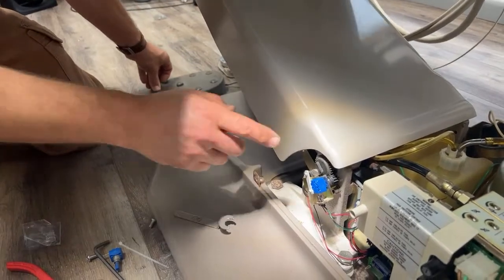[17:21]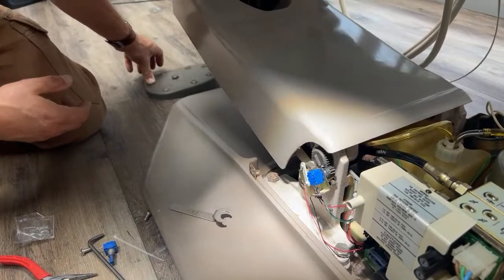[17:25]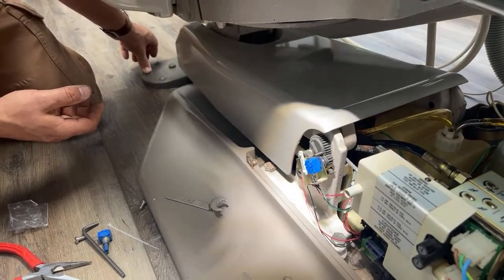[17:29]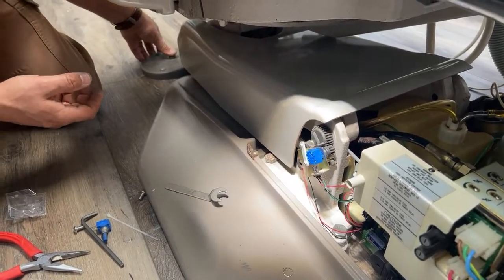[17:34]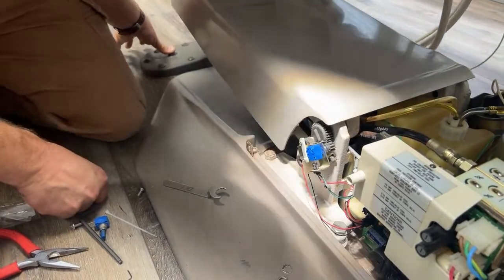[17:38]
So we're going up. Now we're going to go down. Sucker. All right, so we're still in the same place. So something, all right, so we replace that.
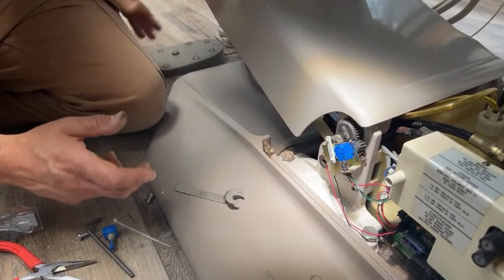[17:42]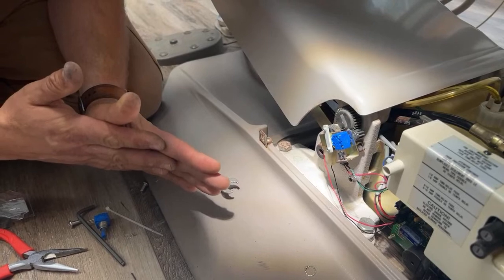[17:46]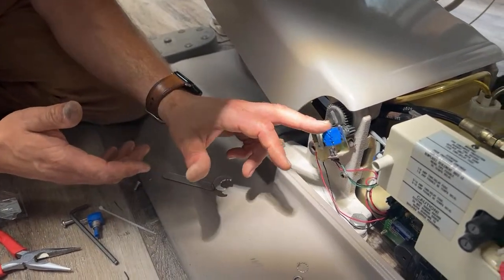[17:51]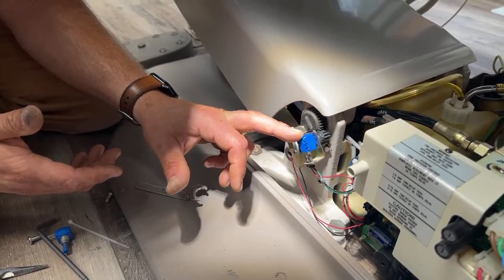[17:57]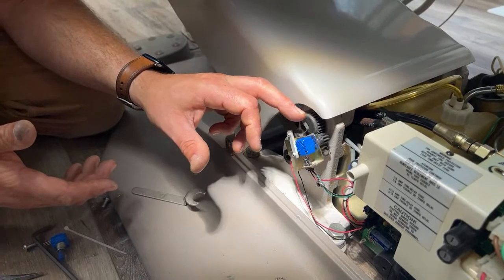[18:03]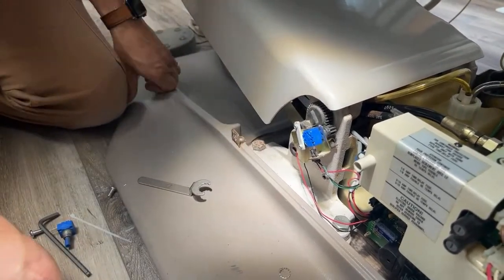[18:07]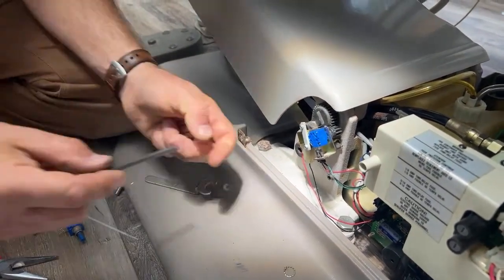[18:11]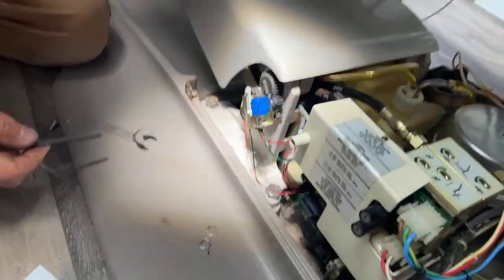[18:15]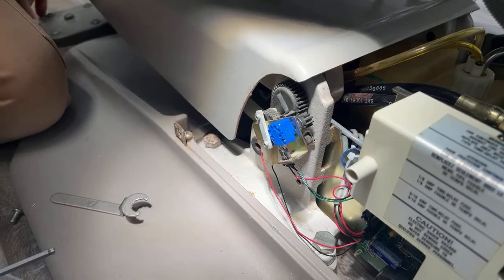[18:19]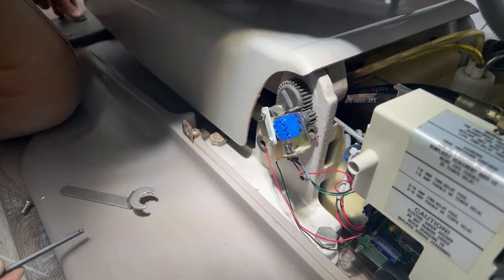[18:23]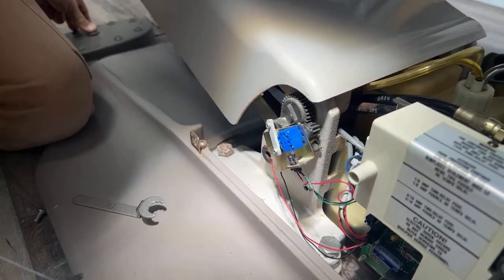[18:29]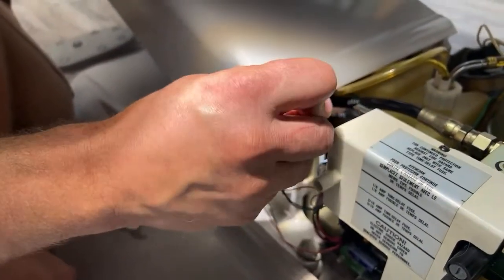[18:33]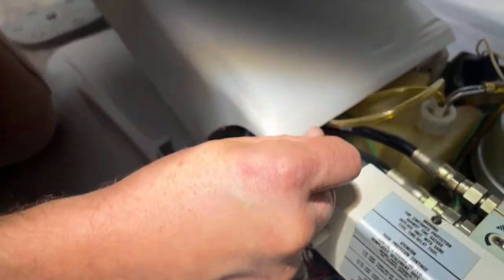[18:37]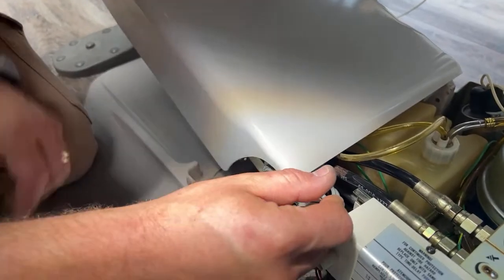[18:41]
All right, so if we replace that, so that's right up. I'm going to try turning this just one more. It said 2. You know what? Maybe we'll go. That's weird. Why is that? So I did tighten that down. Why was that?
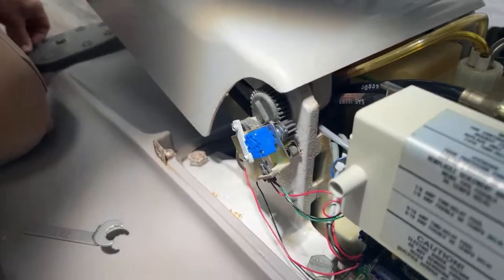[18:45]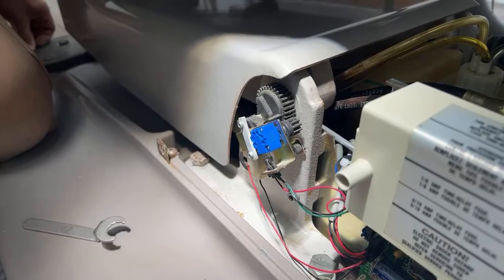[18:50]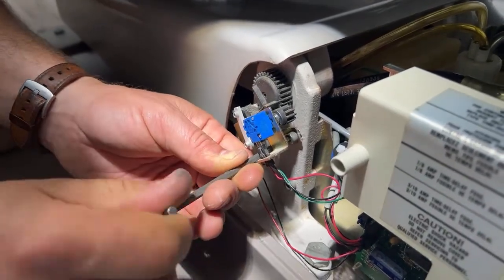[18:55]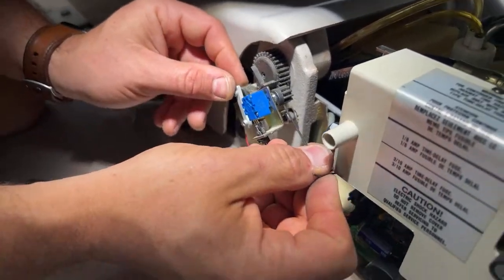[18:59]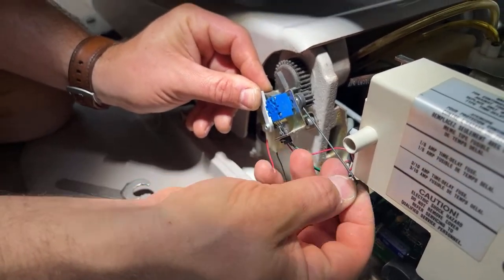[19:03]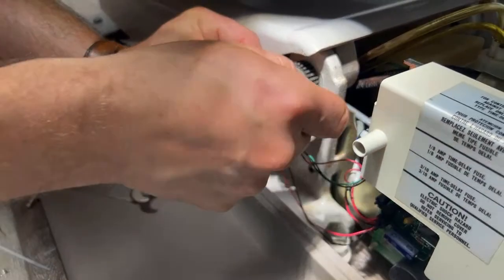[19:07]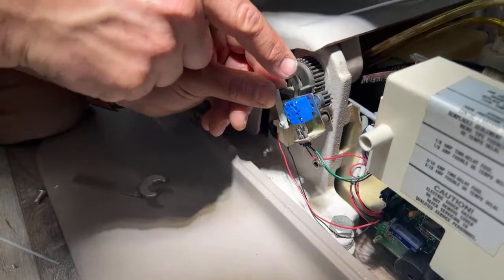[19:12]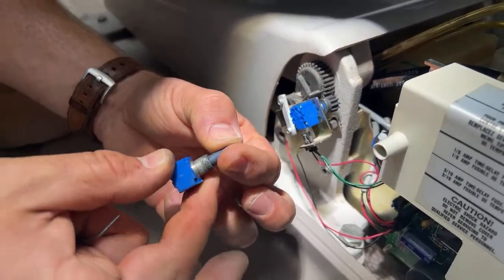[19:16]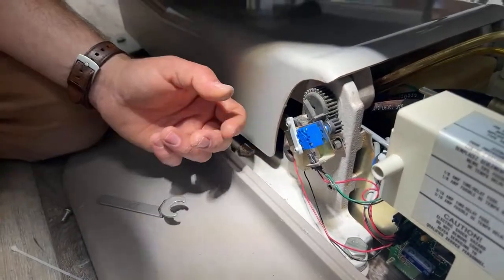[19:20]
All right, so let's back this off again. Whoa, loosen that up. All right, I'm going to rotate that way. And when I tighten that, it's actually turning the blue part on the inside of it. So that rotates. So that's what's happening. That's what I'm actually doing right there.
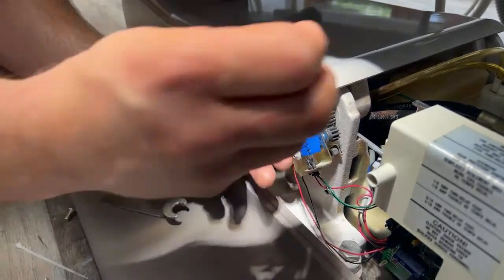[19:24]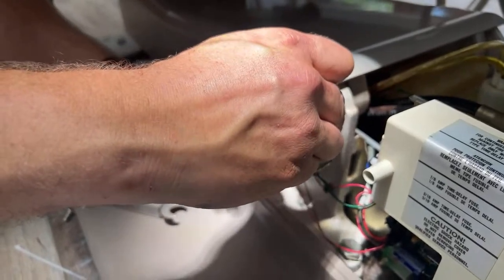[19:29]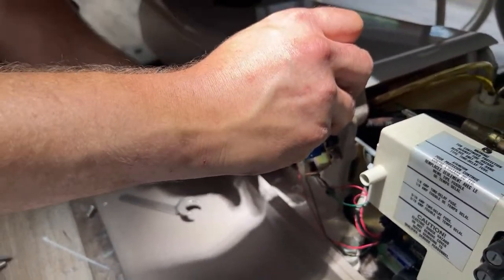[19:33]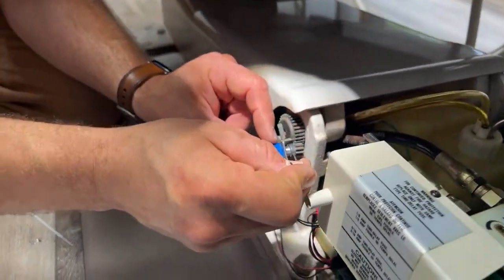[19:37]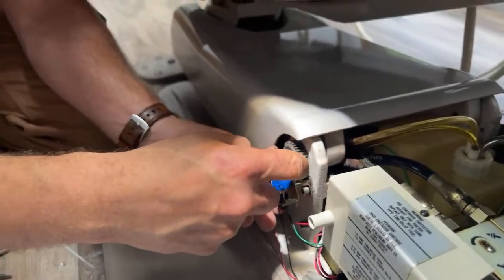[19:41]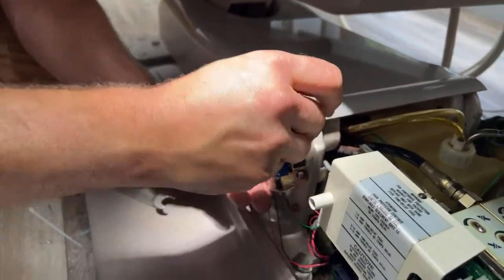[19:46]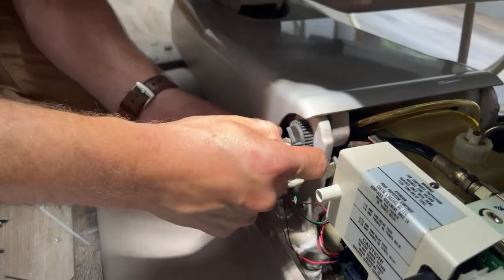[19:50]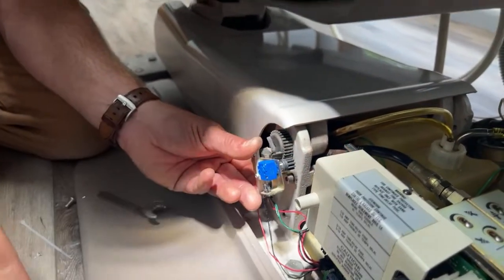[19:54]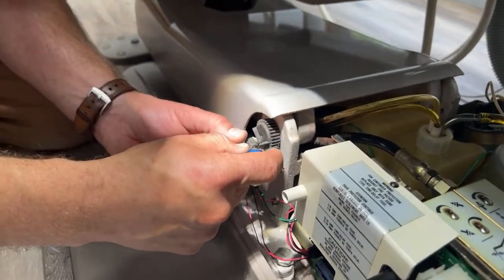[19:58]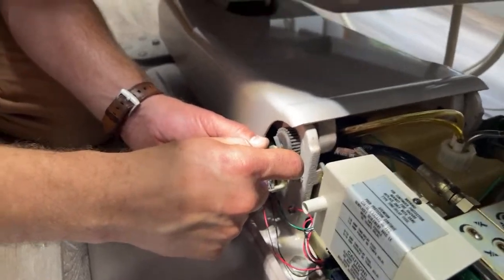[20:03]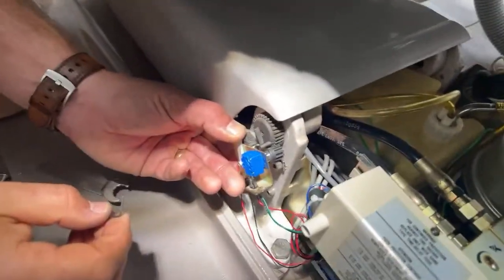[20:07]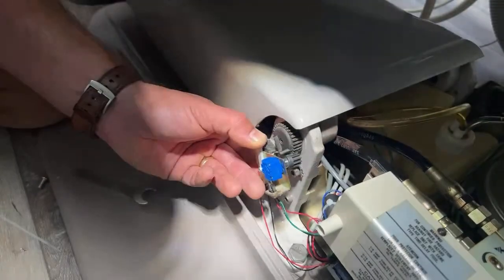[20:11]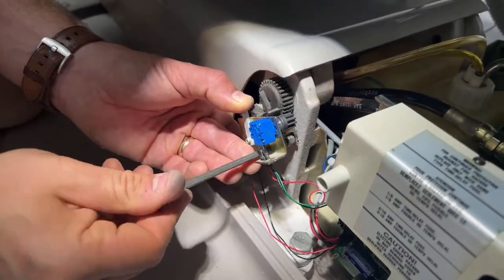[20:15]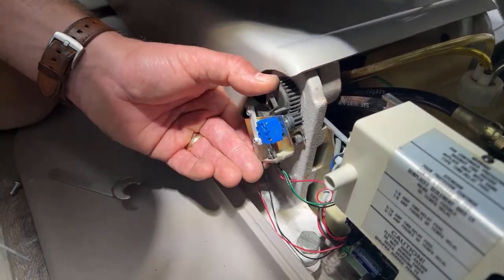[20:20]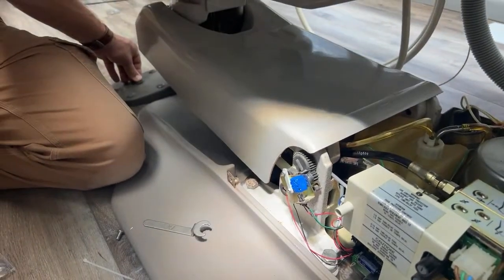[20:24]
All right, so we're down. We're going to turn it. Oh, come on, buddy. So let's tighten. Oh my gosh. I don't know, Kyle. I'm usually more successful in this. All right. Okay, there we go. So that's down. So there's that. Now we're not 1, 2. Okay. It's tight. All right, let's see. Okay.
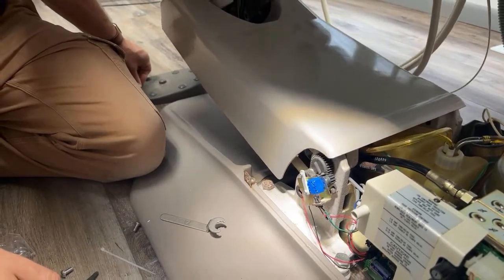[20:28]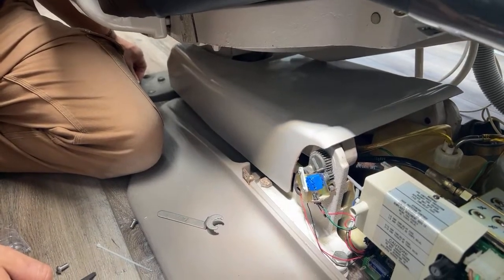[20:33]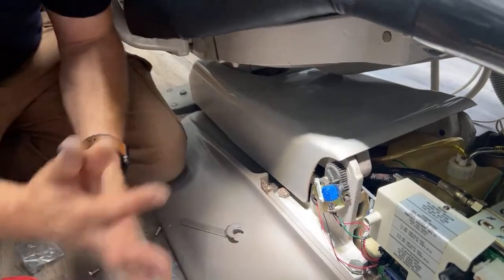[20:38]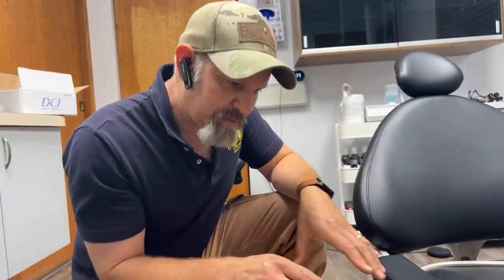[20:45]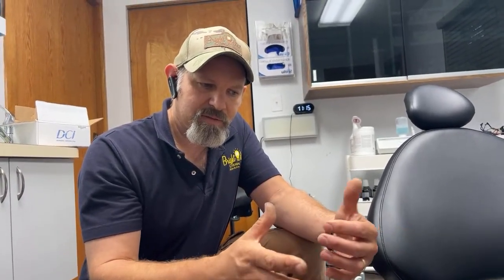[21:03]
So I think what we have here is a scenario where the potentiometer should be communicating to the board, telling the machine what to do. We're not stopping where we need to stop, which makes me think that maybe the problem is actually in the board itself. So I'm going to go ahead and probably replace the board, and we'll see if that solves the issue. My hunch is there's going to be part 3 to this.
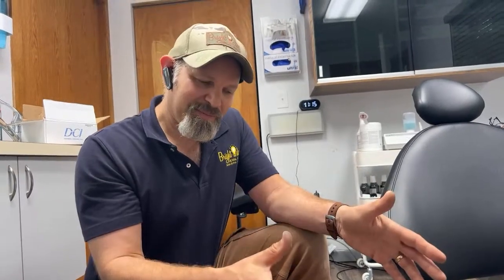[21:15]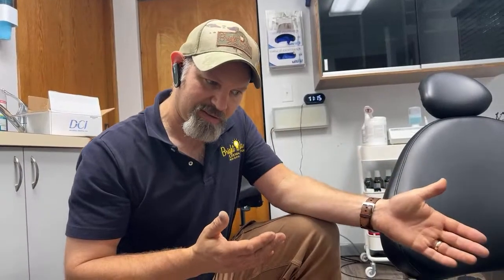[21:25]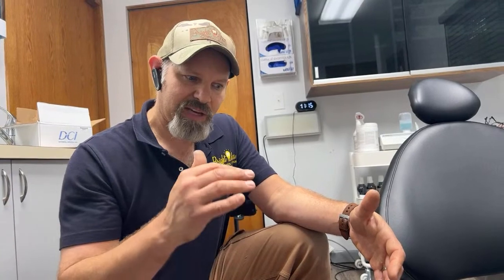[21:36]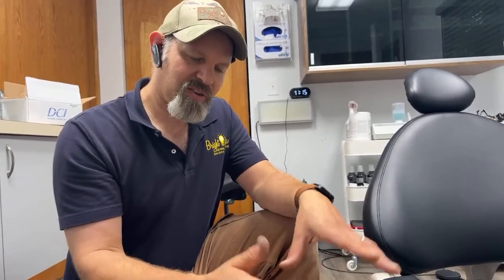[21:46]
But these are some of the things you would typically see when replacing this part. We definitely did replace that, but as you take steps in troubleshooting, you start with the easier things, and things just gradually get harder. But at this point, that board takes those signals from the sensor and does things inside the machine, and it seems to me like we're not stopping when we need to stop. This is the board. So that's what I'm going to do now. We have a used board, so we're going to throw it in there, and that'll be the next part of our adventure. Thank you.